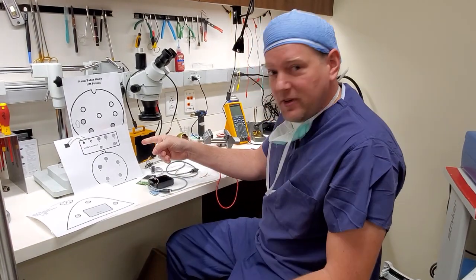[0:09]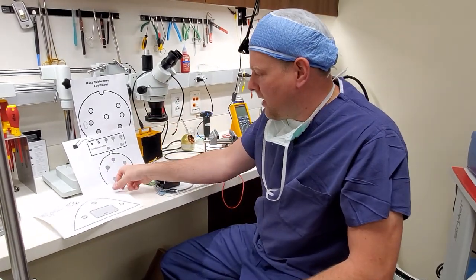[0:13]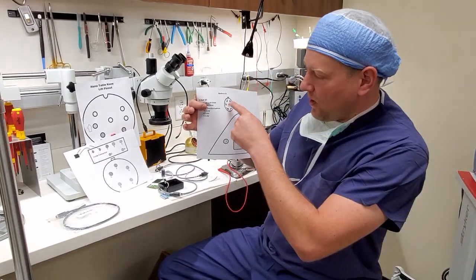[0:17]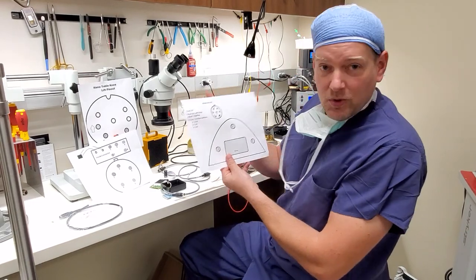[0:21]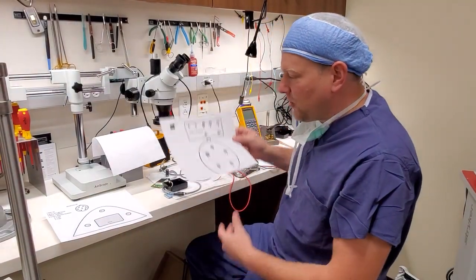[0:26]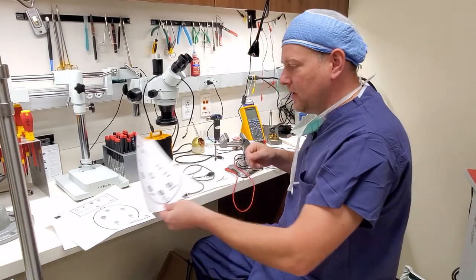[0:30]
We are going to learn how to do a pinout on a piece of equipment. Now as you can see over here, I've got several pinouts to existing things that I have. I've got a Medtronic IPC pinout. Normally these are all color-coded on my computer, but I only have a black and white printer, so what you see is a black and white pinout. I've got a Leica foot control pinout. Let's see, this one is a Hana table knee lift pinout.
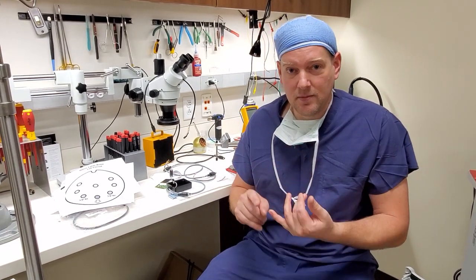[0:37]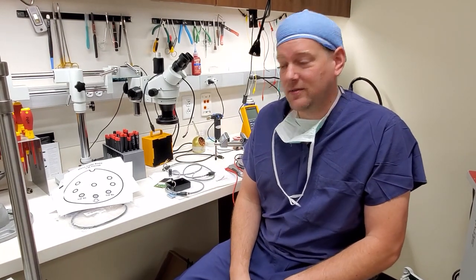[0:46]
It's absolutely essential that if you are going to be repairing equipment, you should document your pinouts correctly and be able to find the pinout for a hand control, foot control, maybe a motor controller, so that you can repair that connector properly and in a timely fashion.
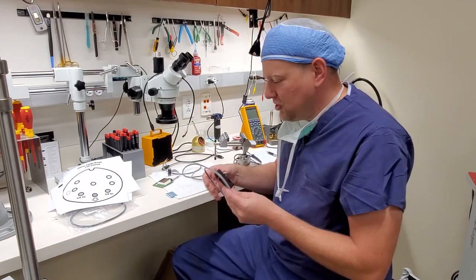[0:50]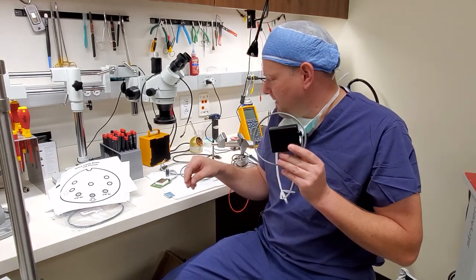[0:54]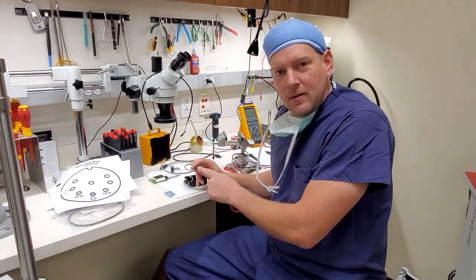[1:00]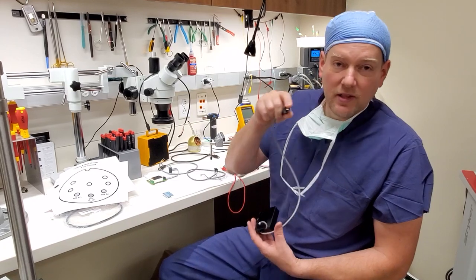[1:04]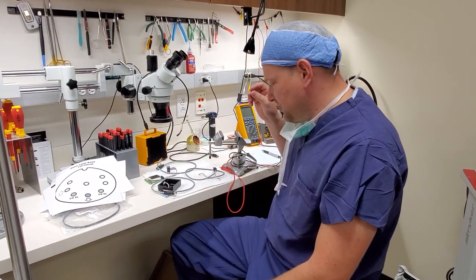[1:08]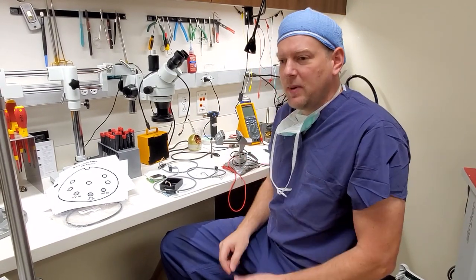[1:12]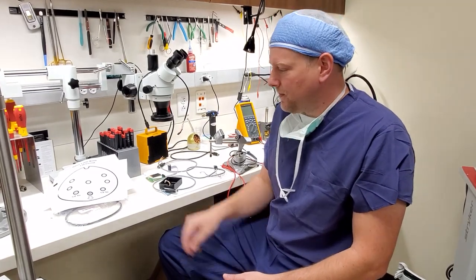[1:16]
Now this right here that we have is going to be a GE ECG cart. If I remember right, this is a modem. The problem is it's got an 8-pin mini DIN cable here, and because of user abuse, they always break off pins. So we are going to fix these things instead of buying a brand new one, because to buy this box, if I remember correctly, it's over $700.
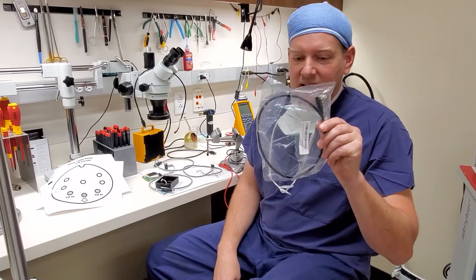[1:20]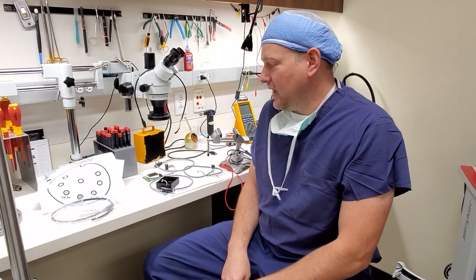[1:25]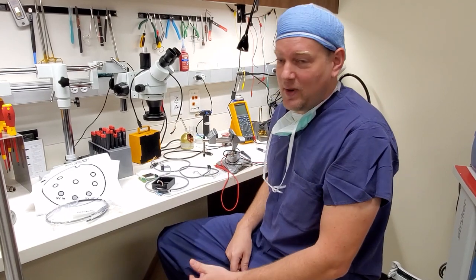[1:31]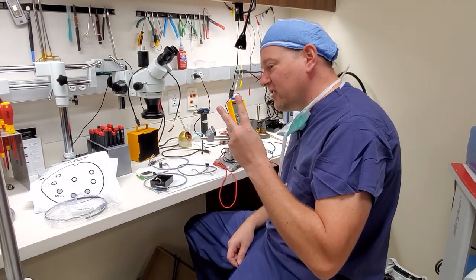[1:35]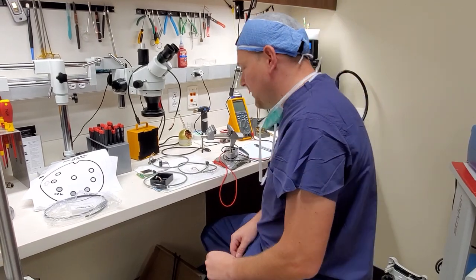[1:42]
And I can buy a male-to-male mini DIN cable, which will allow me to fix two of these boxes, and it cost me $7.32 from Amazon, and I get it in 2 days. So a $7 part can fix two $700 boxes, and we're going to show you how to do it using your own pinout. So we're going to start right out.
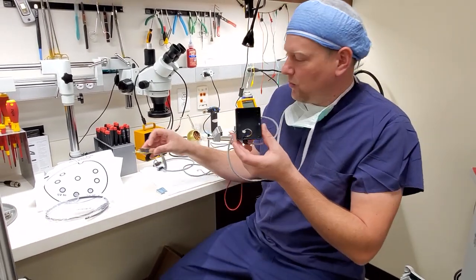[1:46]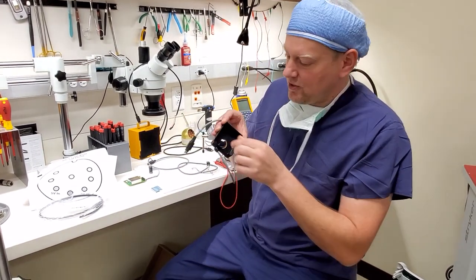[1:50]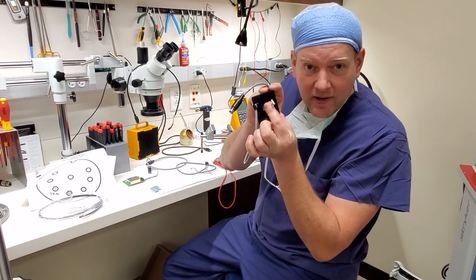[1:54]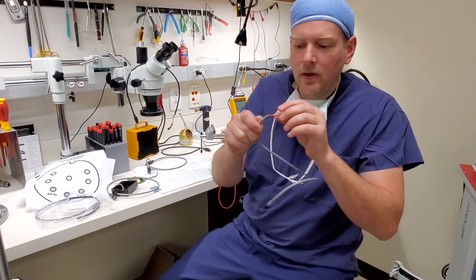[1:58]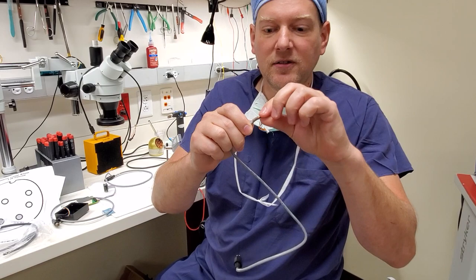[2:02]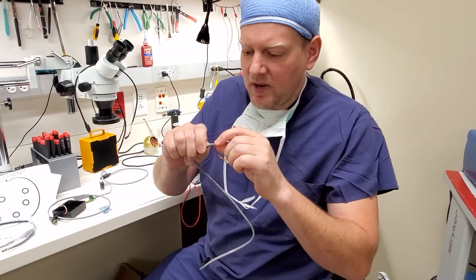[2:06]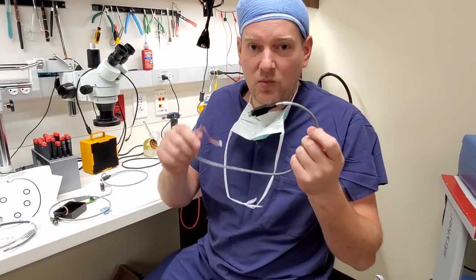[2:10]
On the inside of this box, you're going to have your PCB, which has your cable. And even though there's 8 pins, you're going to notice that there are only 4 wires that come out to the internal connector. One of the other things you'll notice, if you look very carefully, is a terminated set of useless cables. You have to be careful, because sometimes these terminated cables will be shorted pins, and that will tell the equipment what type of box is connected or vice versa.
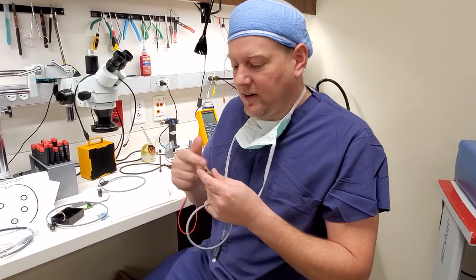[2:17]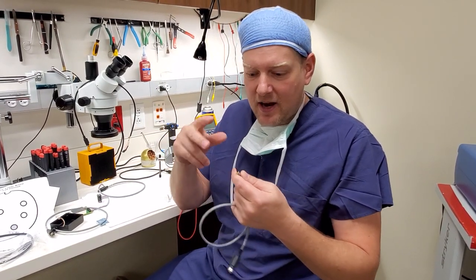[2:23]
So the first thing I had to do when I did the pinout on this particular device is pull the heat shrink off and verify that all those wires are just cut flush. They're not actually terminated, soldered together.
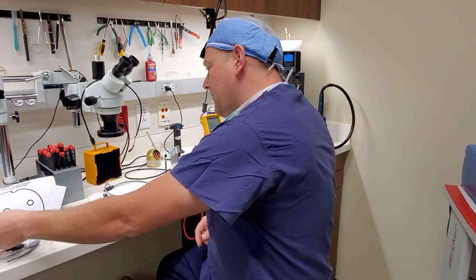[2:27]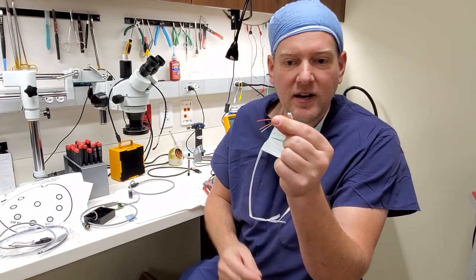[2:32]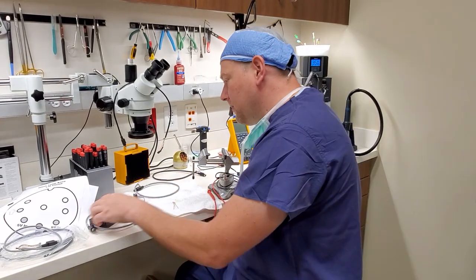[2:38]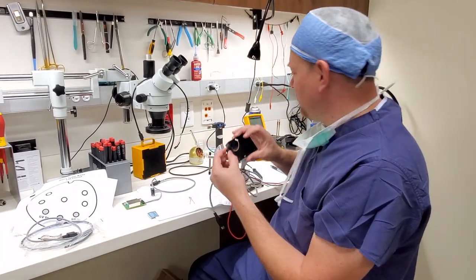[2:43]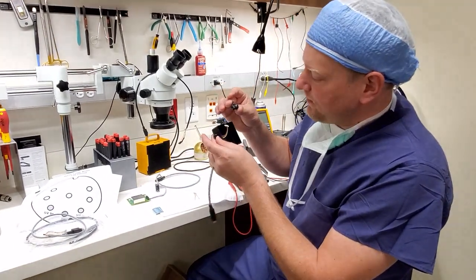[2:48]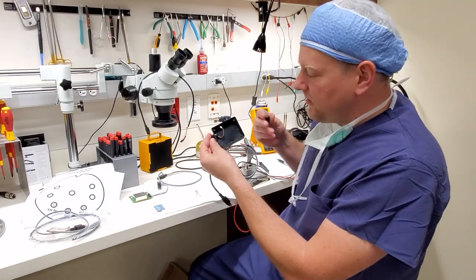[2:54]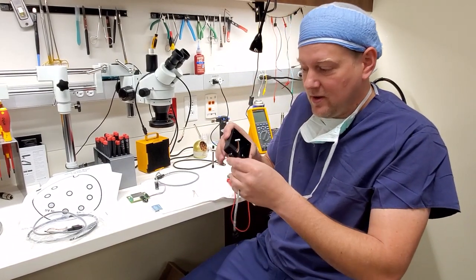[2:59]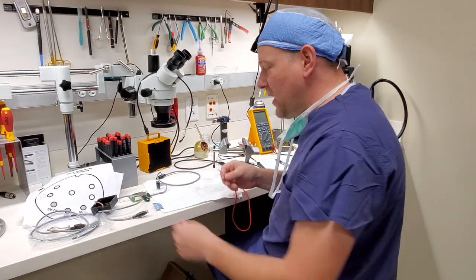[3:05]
Once we get that out, you are going to cut off your miniature connector. We are going to cut this off of your old cable. You can see it right here. I cut it off. You squeeze this little connector, which is actually your cable strain relief, and when you squeeze it, you'll notice that there's some adhesive in there. So we use the hot air station to heat up the adhesive, squeeze it so that we can pull out the cable, cut your connector off, and then we are ready to do the pinout.
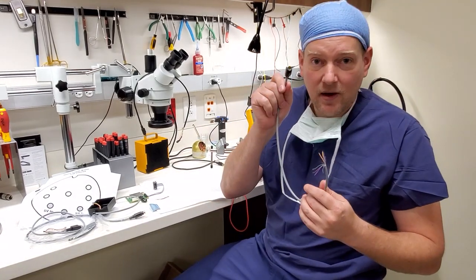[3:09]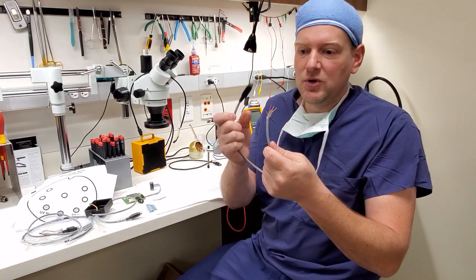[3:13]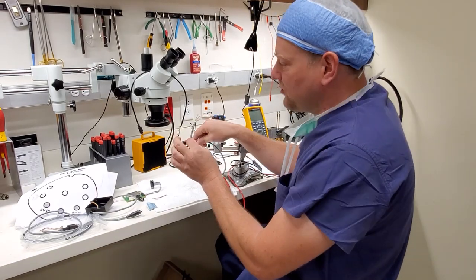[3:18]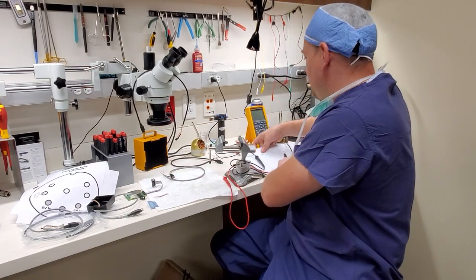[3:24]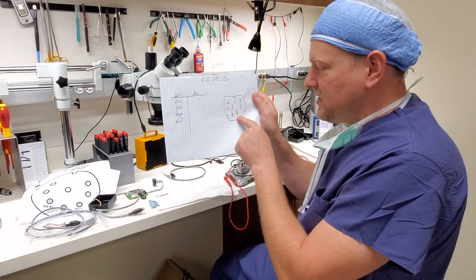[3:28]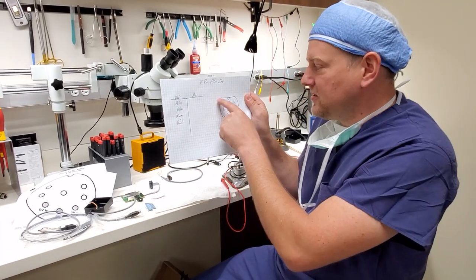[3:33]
You can see here we've got our original old 8-pin mini DIN, and the original wires were orange, yellow, red, and blue. I've got those wires separated and stripped back just a little bit so we can find the pinout. One of the main things that we do in our documentation is draw a representation of the connector. And since all connectors are different, your representation should be different for every single device that you pull out.
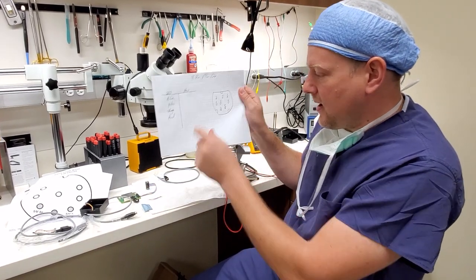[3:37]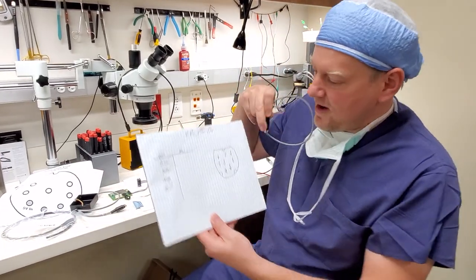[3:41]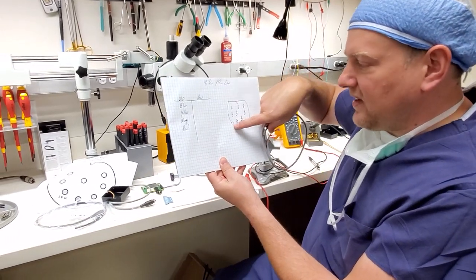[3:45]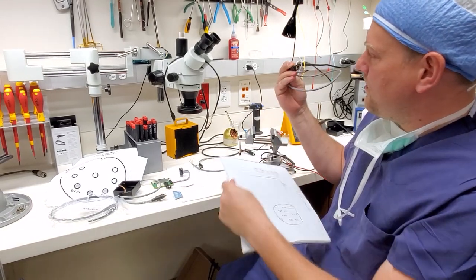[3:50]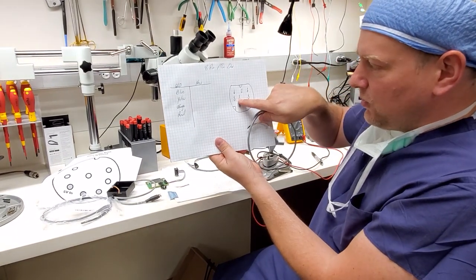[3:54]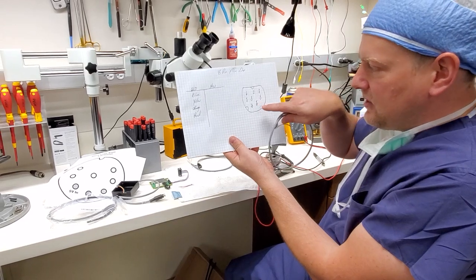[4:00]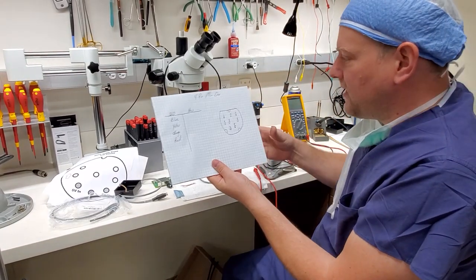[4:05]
You can see here, since it's a mini DIN, the top of the connector is flat. There's a recessed indexing mark at the top and two at the bottom. You have 3 evenly spaced pins at the top, 2 that are closely spaced over on the left side, 1 remote pin over on the far side, and 2 of them down at the bottom. So that's my representation. The next thing you do is label those pins.
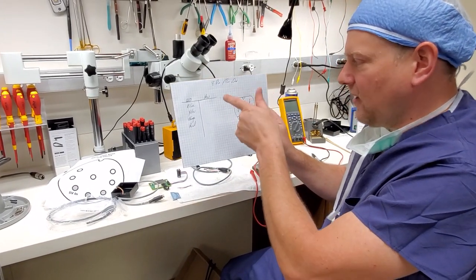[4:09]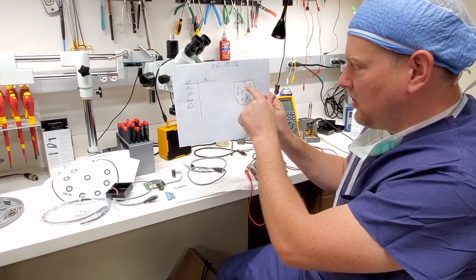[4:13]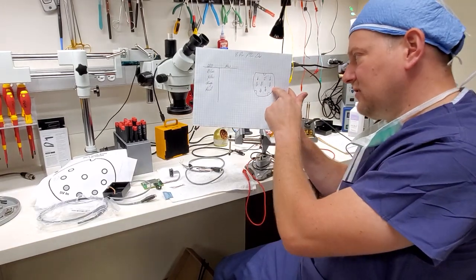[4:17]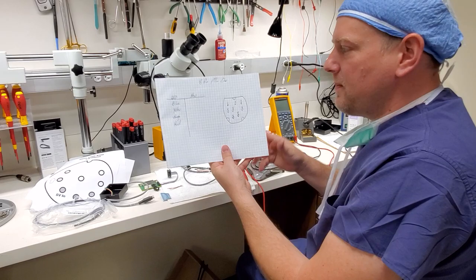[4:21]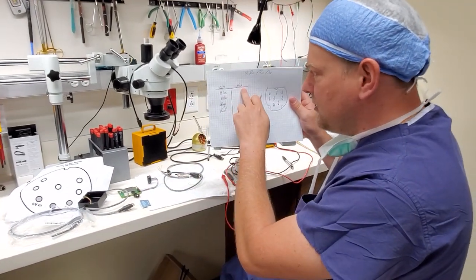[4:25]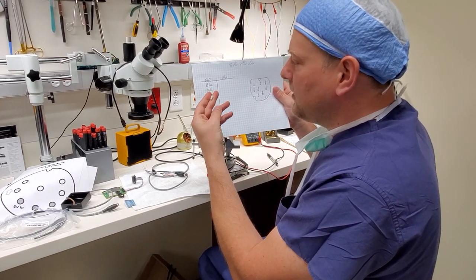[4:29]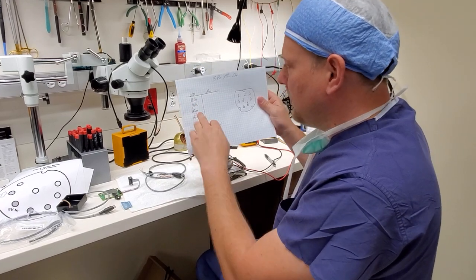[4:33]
And I start at the top left, and you go sequentially across the connector. So I did pin 1, 2, 3, 4 and 5 are next to each other, pin 6, pin 7, pin 8. Now I have the basis to start my pinout. You can see here, I have old and new segmented on my page. I have my old connector. There's 4 wires, blue, yellow, orange, and red. So I have those written down and ready to rock and roll.
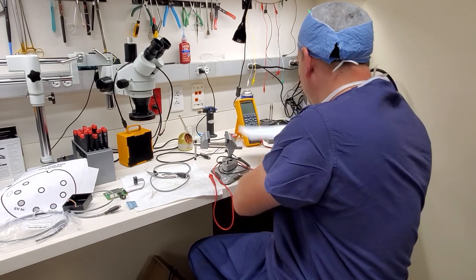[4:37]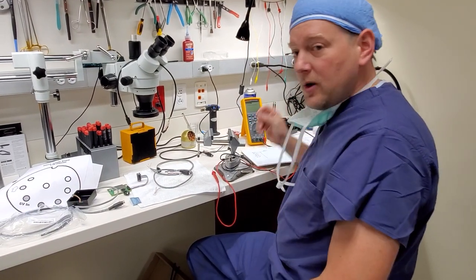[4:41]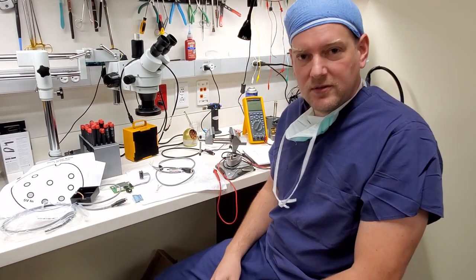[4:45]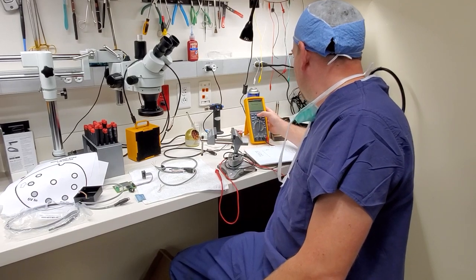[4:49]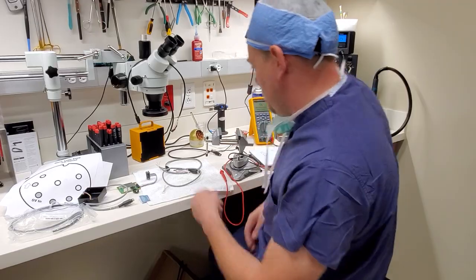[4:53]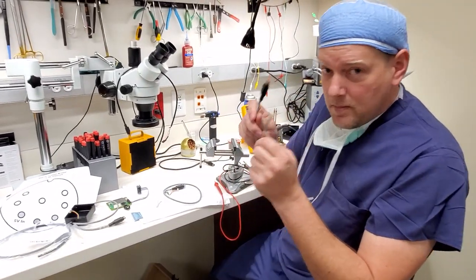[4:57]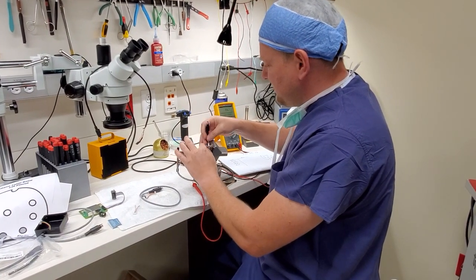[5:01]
Go ahead and start up my multimeter, and we're going to put it on continuity, because you're going to use continuity to find the endpoints of your cables. So let's see, we put it on there, we get the bleepity bleep, and we're ready to go. So I have my original mini DIN, I'm going to go ahead and put it in a vise so it's nice and stable.
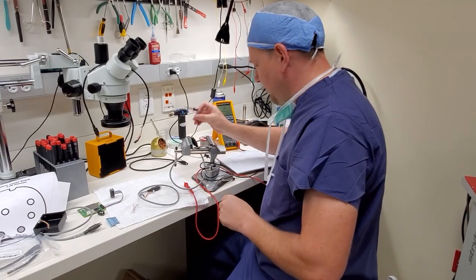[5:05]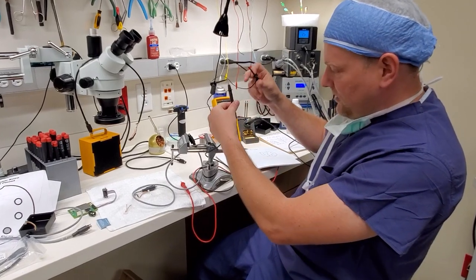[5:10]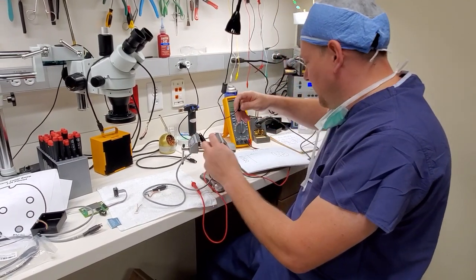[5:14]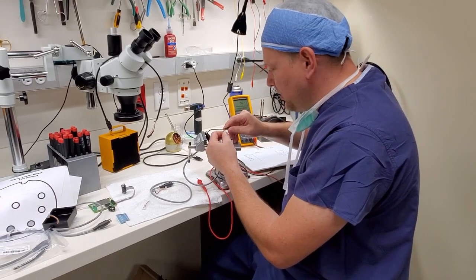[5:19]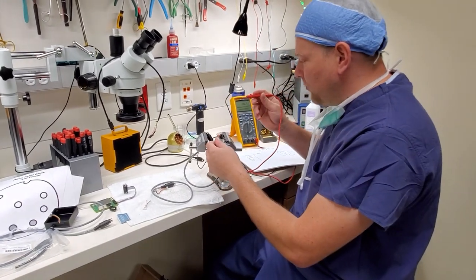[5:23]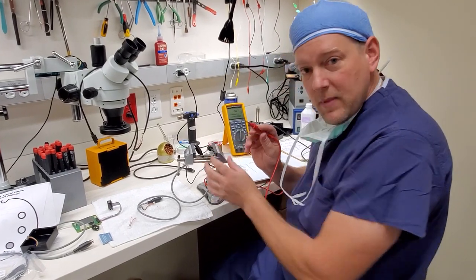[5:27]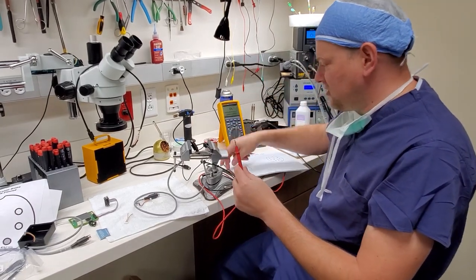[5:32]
Then the next thing I will do is I've got little jumper wires. You can see I have one connected to the end of my meter lead. And I'm going to connect it to one of those four colors. You got blue, yellow, orange, and red. So I'm going to connect it to the blue. And we're going to take our other meter lead and we're going to touch that blue wire and make sure that we have continuity. And that also tests your jumper wire, it tests your lead, it tests everything. So that's your first step.
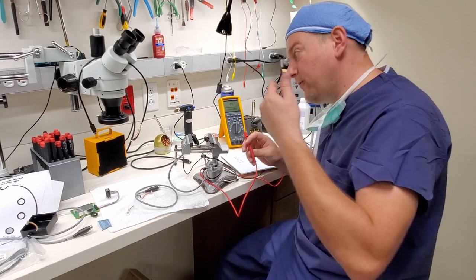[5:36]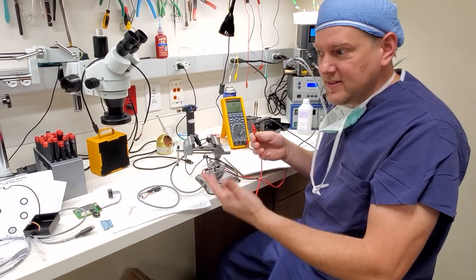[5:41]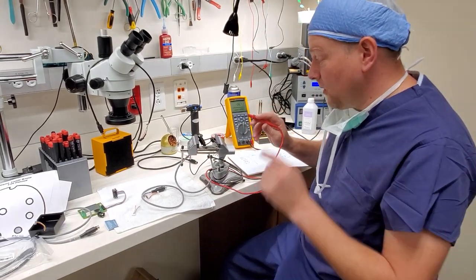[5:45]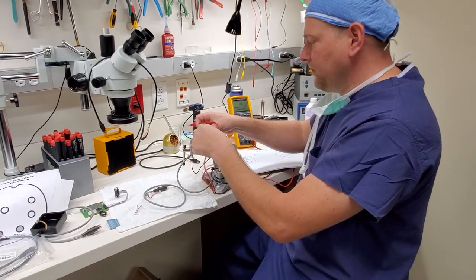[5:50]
Check your leads before you start doing your pinout, because if you have bad leads or if you have bad jumper wire, it does happen, you're going to do a lot of work and you're going to be chasing your tail. So check your leads first. We're good. We're ready to rock and roll.
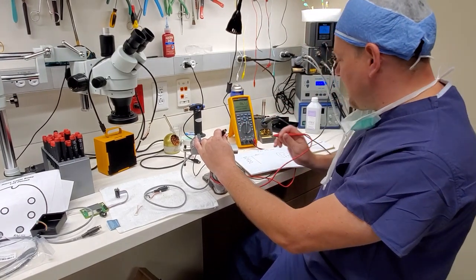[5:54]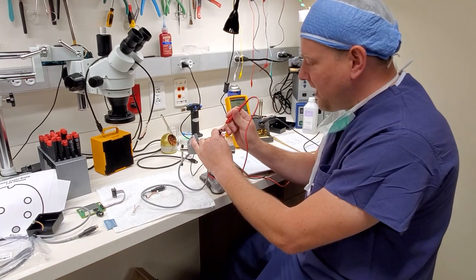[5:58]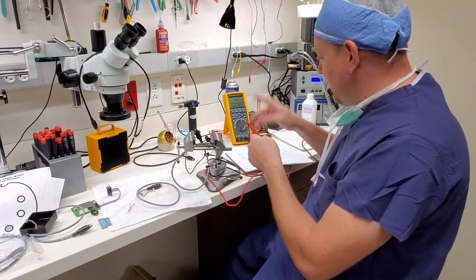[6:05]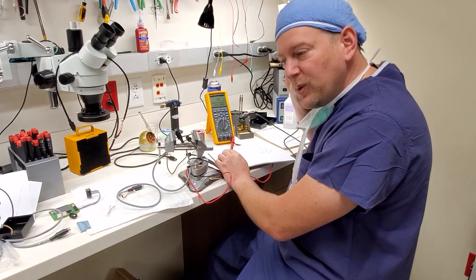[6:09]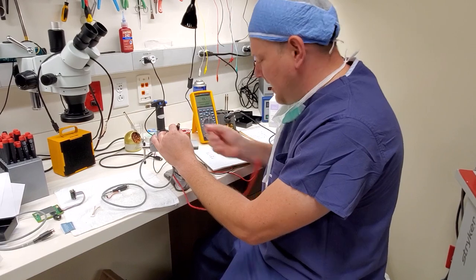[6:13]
I take my 8-pin mini DIN and I start with pin 1, and then we go to pin 2 and pin 3, and we find out I didn't get very far. You can see I got to pin 2. You don't even have to look at the meter. Just set it on continuity so you can hear it if you have continuity. But I'm not going to stop there. So I got it. I got the pin 2.
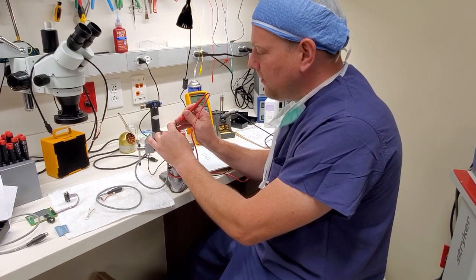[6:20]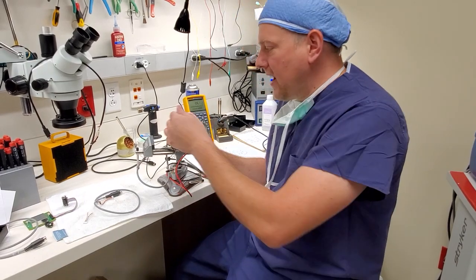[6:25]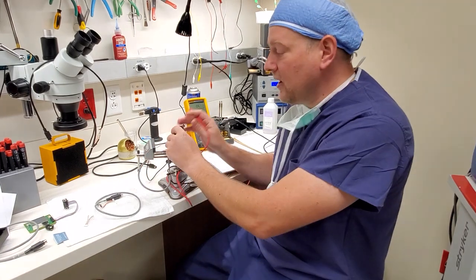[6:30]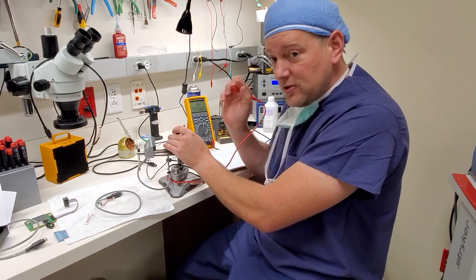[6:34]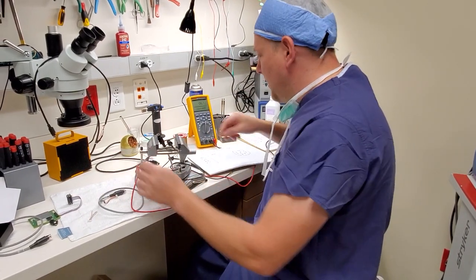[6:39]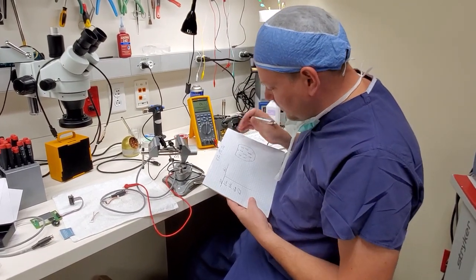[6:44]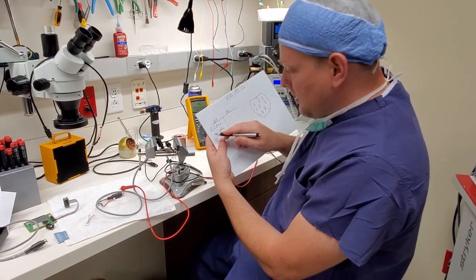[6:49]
Now you got to check the other pins, because in some cables you will have a resistor or a jumper either inside the connector, on the back of the connector, or in line down the cable someplace. So be sure to check your cable to make sure that there's only one pin that is continuous to that specific wire. So then I'm going to take my ink pen. That was pin 2. So I'm going to write pin 2. Pin 2, blue.
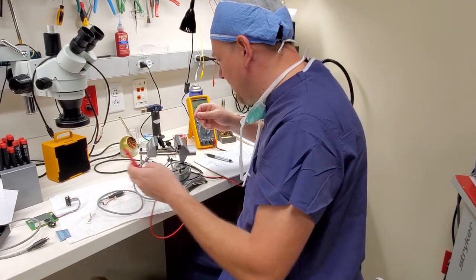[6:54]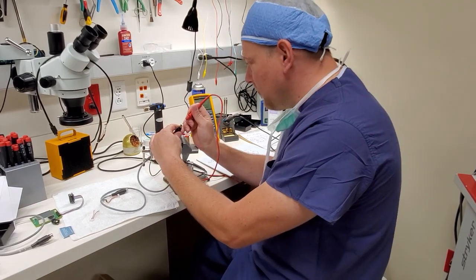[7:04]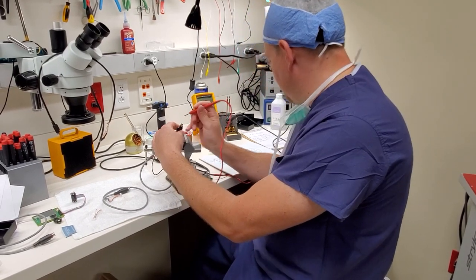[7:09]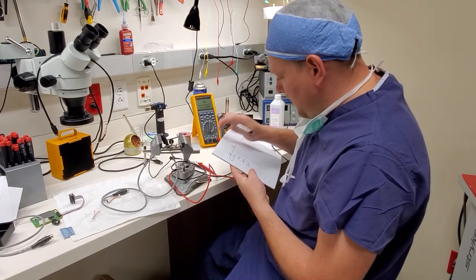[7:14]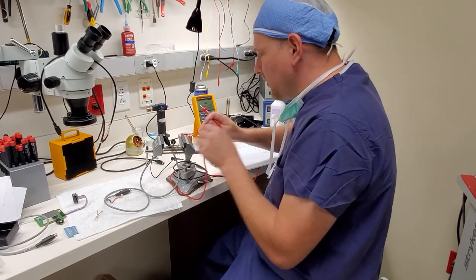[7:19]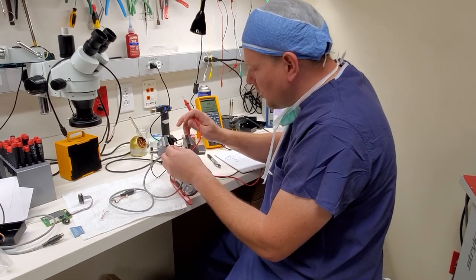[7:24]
Next, we got yellow. We're going to go down from there. I'm going to move my meter lead jumper to yellow. It's connected over. I'm going to grab the 8-pin mini DIN, and we're going to run through all the pins. And you can do this really quickly. Okay, so according to my little chart here, yellow goes to pin 4. So we're going to go pin 4. Switch it over to the next. Next one is orange. So we're going to go through them.
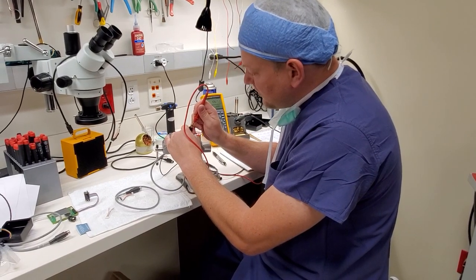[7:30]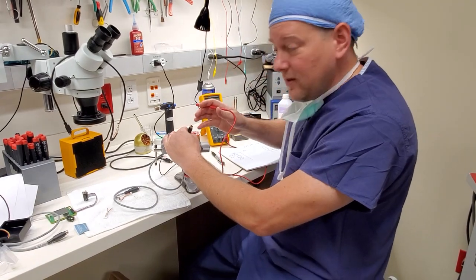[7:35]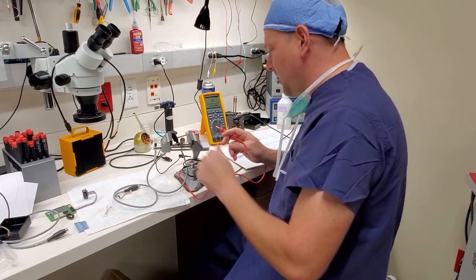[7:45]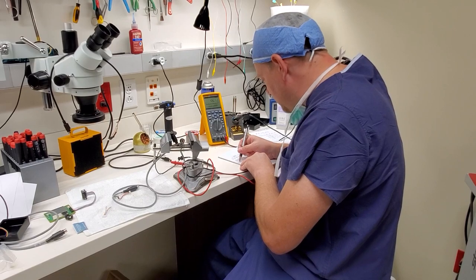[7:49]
All right. So on this particular cable, I have one pin that snapped off, which is the whole reason that we're going to do this repair. And it appears that the orange cable goes to the broken pin. So I just shove it down in there. I already checked the other pins. It only goes to one, the broken off pin. So here we go. Pin 5 is orange.
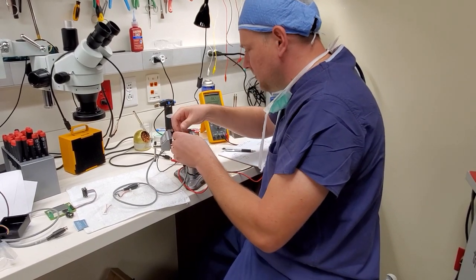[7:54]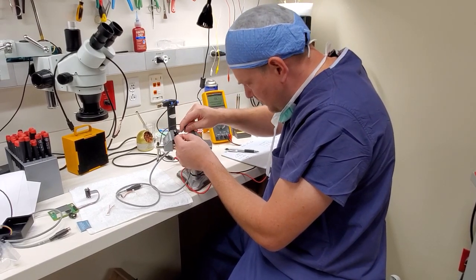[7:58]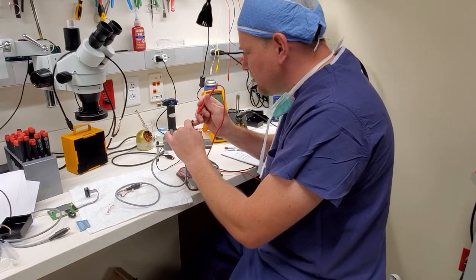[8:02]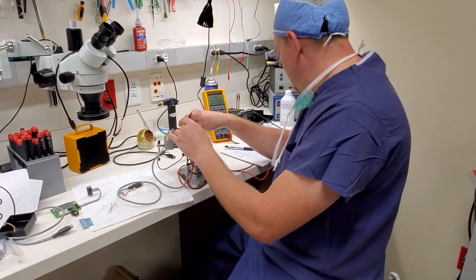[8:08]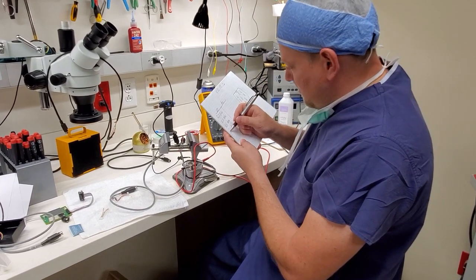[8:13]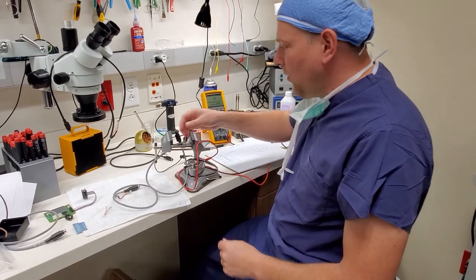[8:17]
And last but not least, we're going to go down to red. Let's check which one's red. 1, 2, 3, 4, 5, 6, 7, 8. Okay, pin 6. So red goes to pin 6 over here. All right, we have our old cable with its pinout.
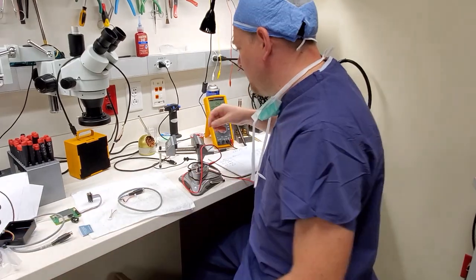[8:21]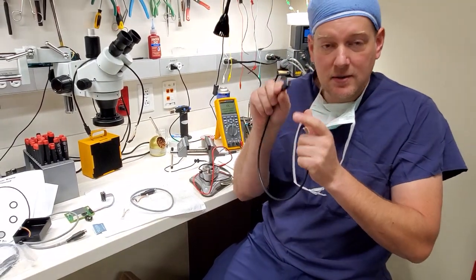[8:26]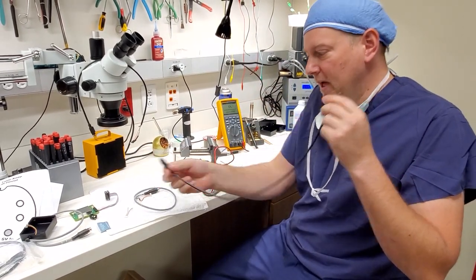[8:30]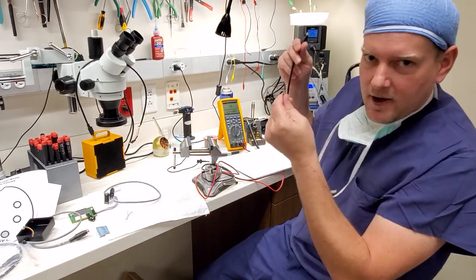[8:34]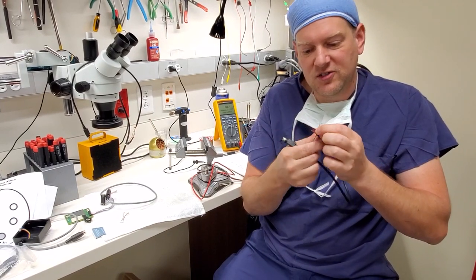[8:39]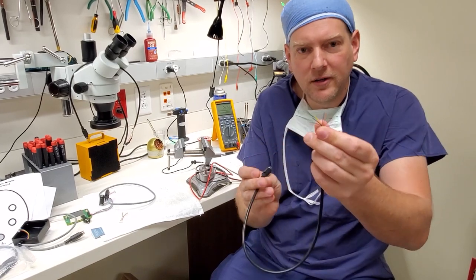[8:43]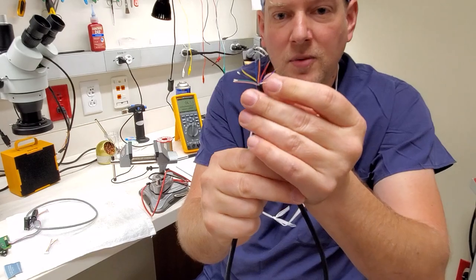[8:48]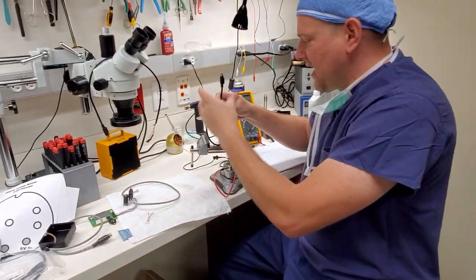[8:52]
Now what we have to do is we have to take our new cable. And as I said, this is a double-headed male-to-male 8-pin mini DIN. So what I do is I stretch the cable out. I get an approximate length from the old cable and I cut it off. You strip it back so that all the wires are separate and the little bit of ends are barely showing. I don't know if you can see that or not. So I have all the pins separated and we are gonna go ahead and set this guy in the vise.
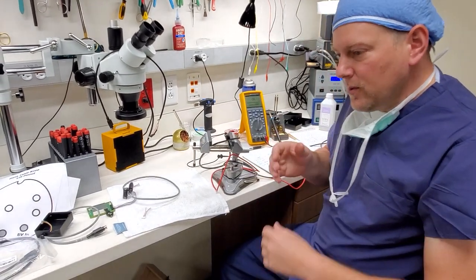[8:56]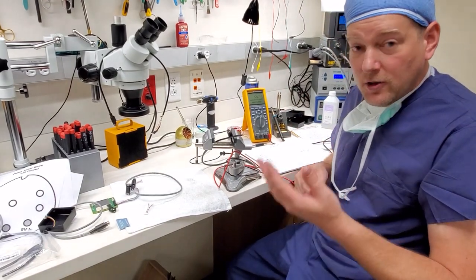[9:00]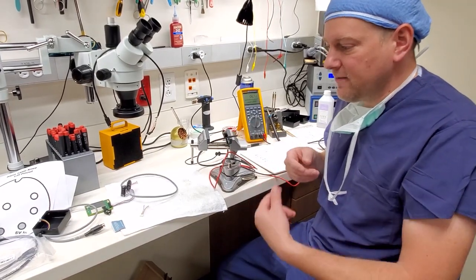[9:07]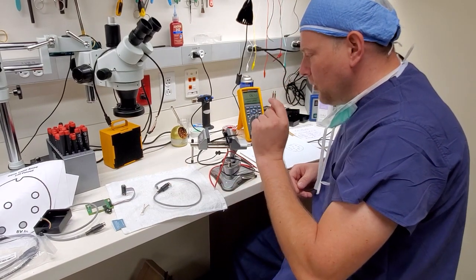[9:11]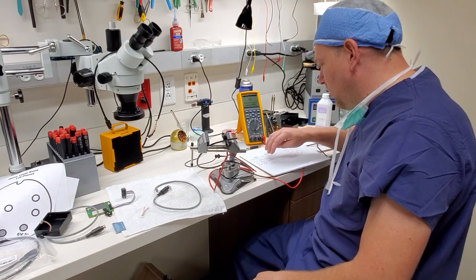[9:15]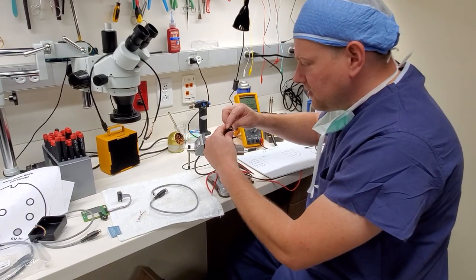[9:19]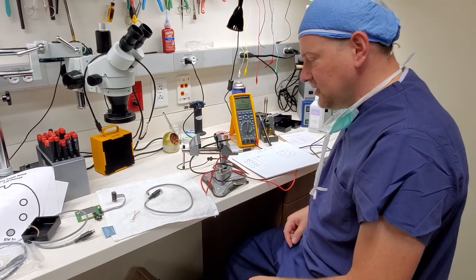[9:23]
Now you can't do color code, cable to cable, because every manufacturer is going to have a different color pin out and you're going to have a whole bunch of variety. So always check your pin out before you start soldering stuff up, especially on medical equipment. So we know that we got those four: blue, yellow, orange, and red, pin 2, pin 4, pin 5, and pin 6. So we know the location of those pins based on our existing chart.
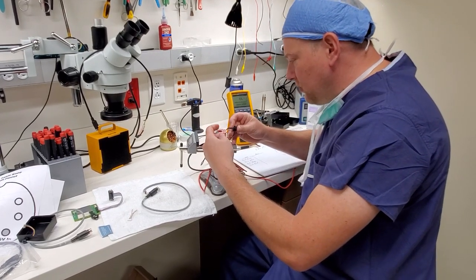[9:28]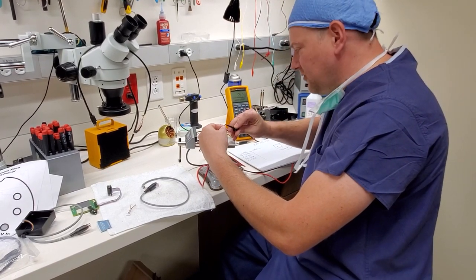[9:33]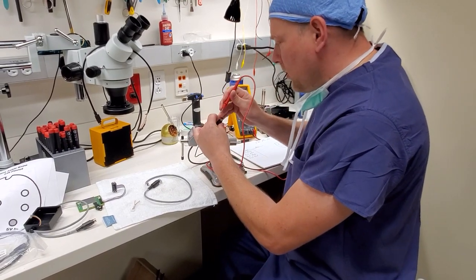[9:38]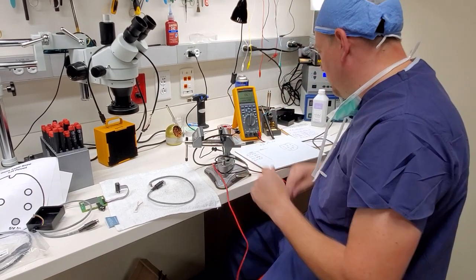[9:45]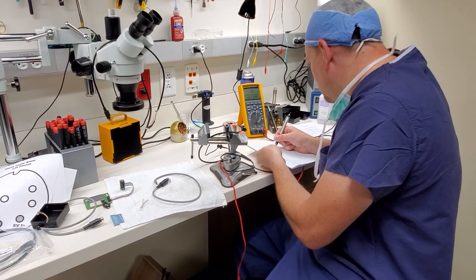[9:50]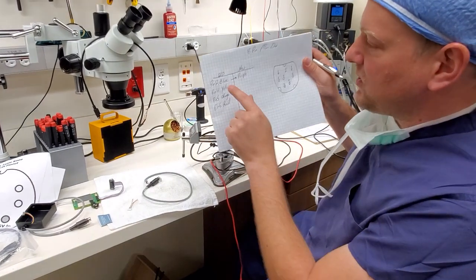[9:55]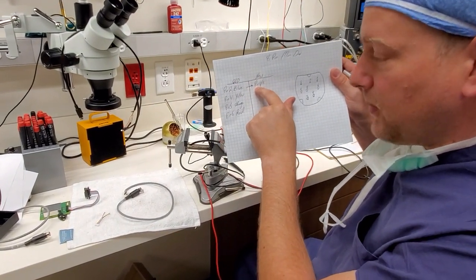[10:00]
So what I'm going to do is go ahead and connect to my first wire, which is going to be, let's do purple. And we're going to start at pin 1 on the mini DIN. There we go. So purple goes to pin 2. Okay, so as you can see here, I annotated that on the new cable, pin 2 correlates to purple.
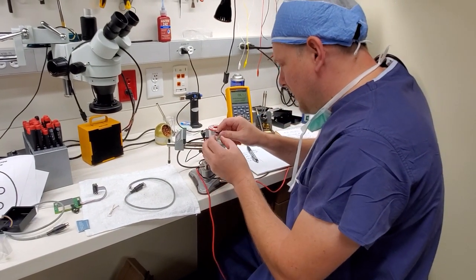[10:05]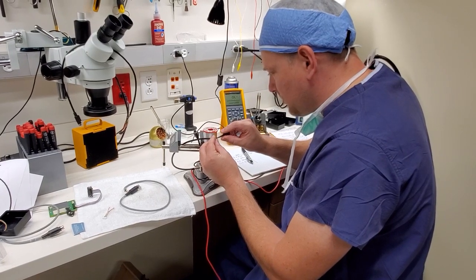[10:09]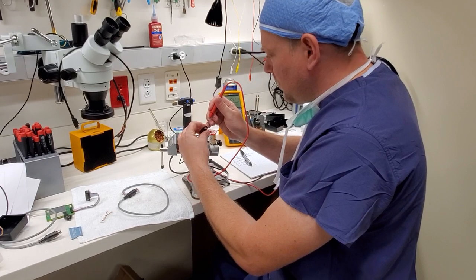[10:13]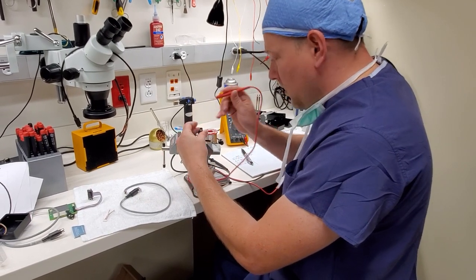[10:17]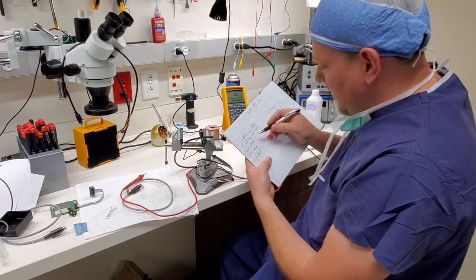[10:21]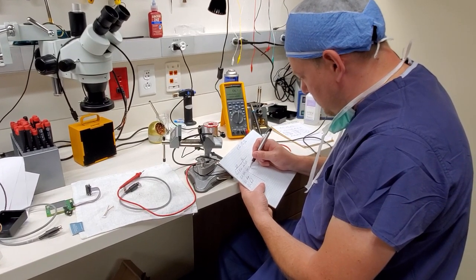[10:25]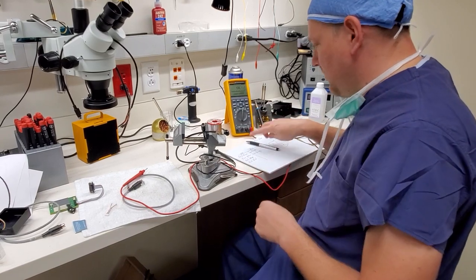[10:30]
Then we're going to go to the next one. Let's try orange. Let's try the orange cable. It's all connected. Pin 1, pin 2, pin 3, pin 4. Okay, orange goes to pin 4. So yellow, draw a line over. Okay, pin 5. Let's try yellow.
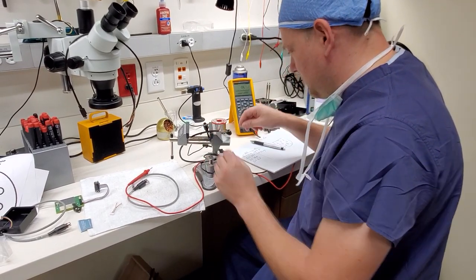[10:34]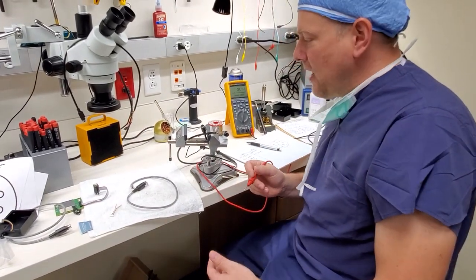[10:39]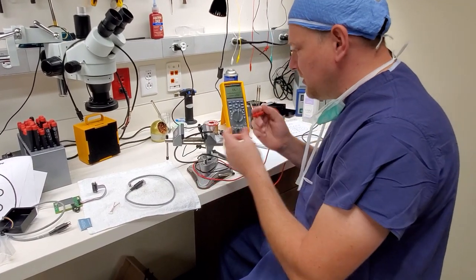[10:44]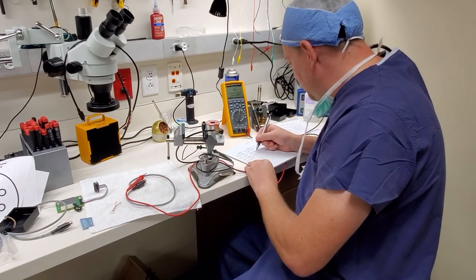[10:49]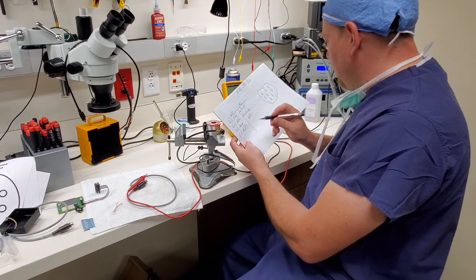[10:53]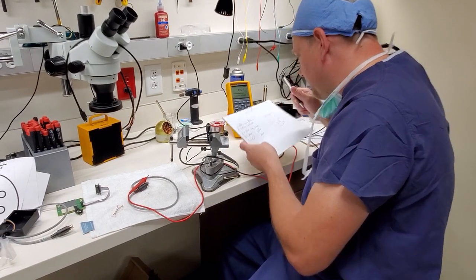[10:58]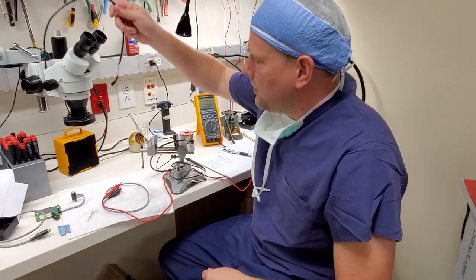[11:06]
Now mind you guys, obviously I've already done this pin out and I've already tested this, so I know what the new color codes are. I'm going to just go ahead and show you guys. We got pin 5 is yellow. And I already know that pin 6 goes to green. So now, I've got my old pin out, I've got my new pin out, I'm ready to start soldering some wires together. You can see here, I've already done it.
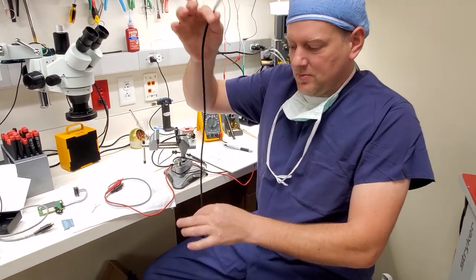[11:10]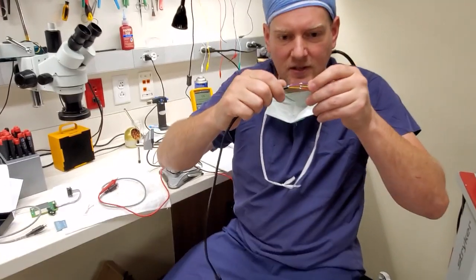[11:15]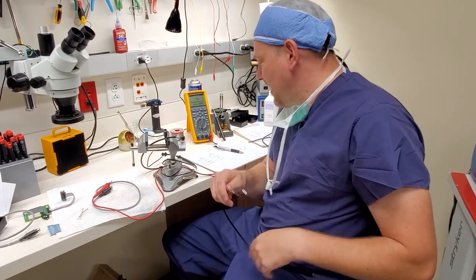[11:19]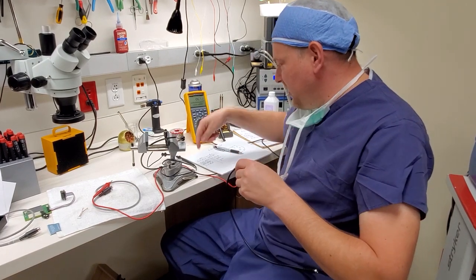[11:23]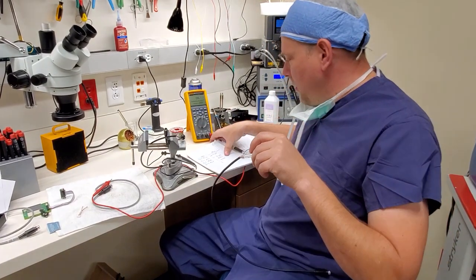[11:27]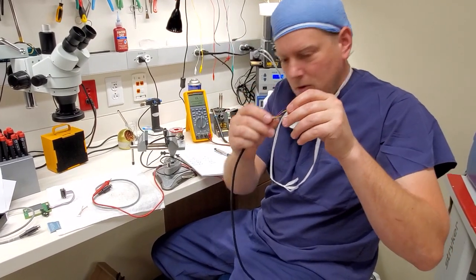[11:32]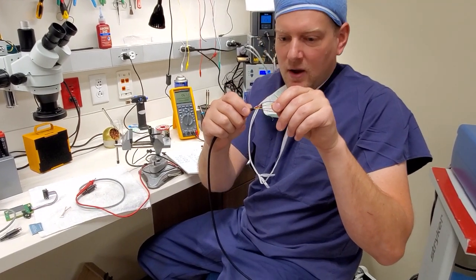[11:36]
So this right here is my new cable, my old end. I have them soldered together in the new color coordination. So we have pin 2, blue, which is on the old connector, goes to purple on the new. So you can see right here, I got blue to purple. My next one is pin 4, yellow, goes to orange. And I got orange to yellow, and then red to green.
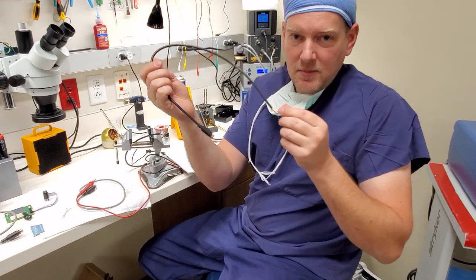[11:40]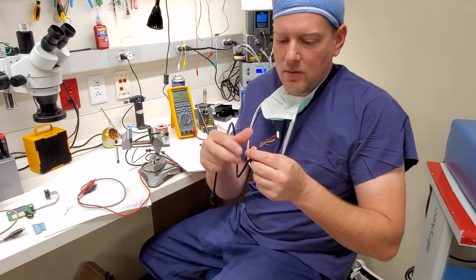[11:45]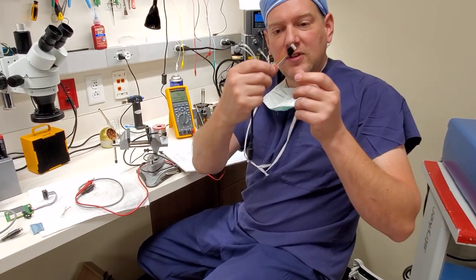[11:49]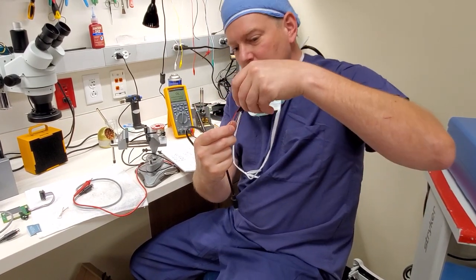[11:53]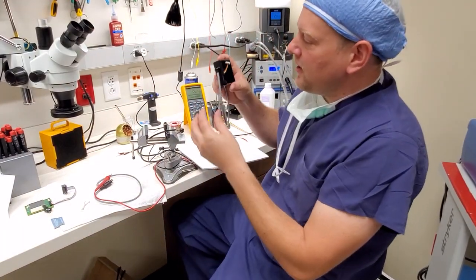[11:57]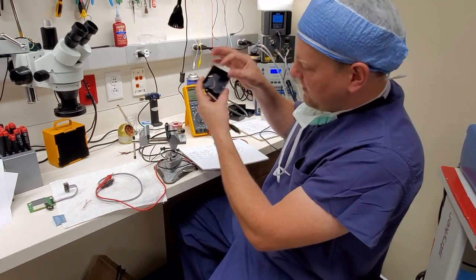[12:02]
Now this cable is going to be different for, you know, batch numbers and everything. So always check your pin out. Don't just solder it up according to the colors that I'm reporting off. But you can see, I've got them all set up. I've got them all lined up. We're ready to shrink tube it. And once it's shrink tubed, I will reinstall it with the cord retainer, and it will look exactly like this when I'm all done.
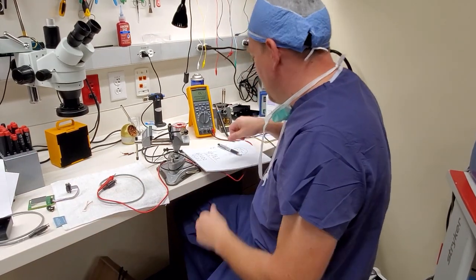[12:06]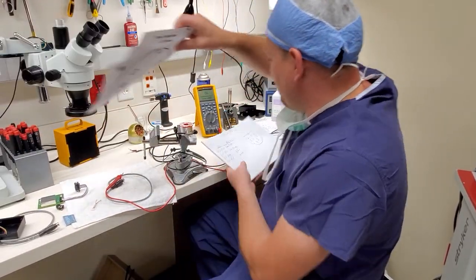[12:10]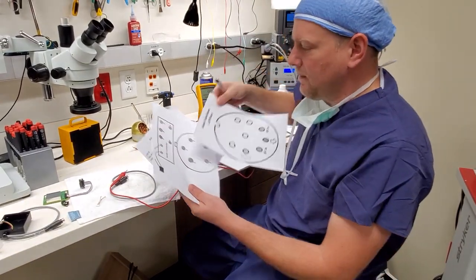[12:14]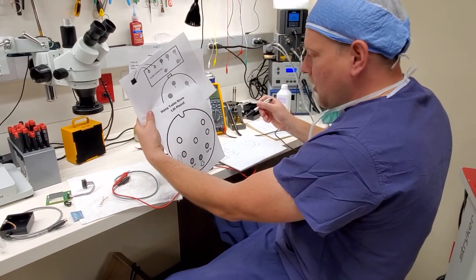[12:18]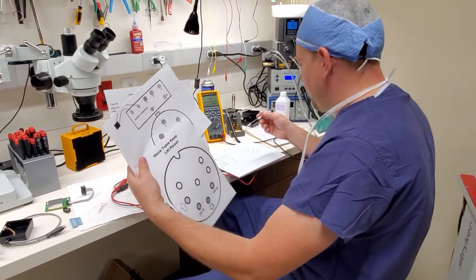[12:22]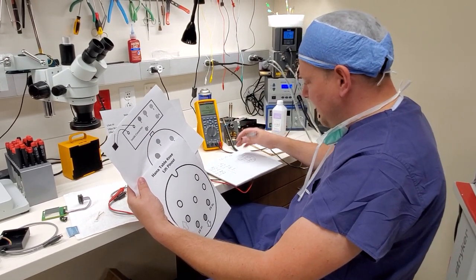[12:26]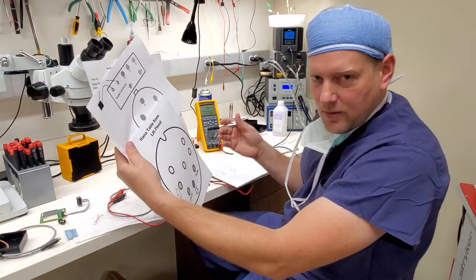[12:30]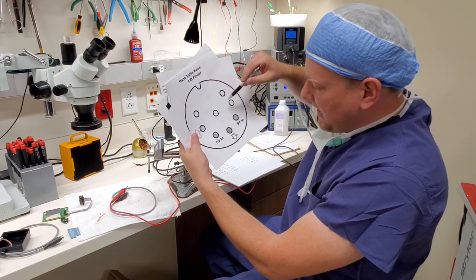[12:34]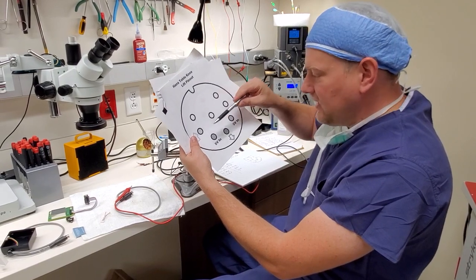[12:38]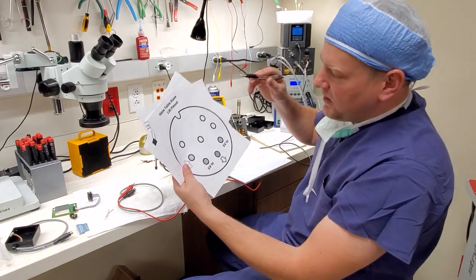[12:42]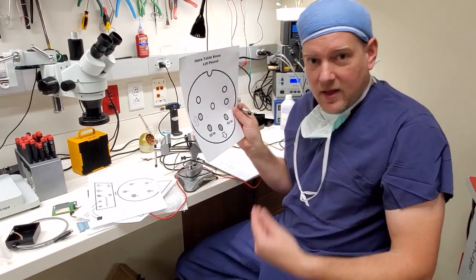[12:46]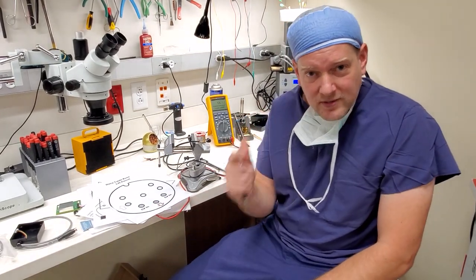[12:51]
So now that I've got the pin out, what I do is I will create in Microsoft Paint, believe it or not, people still use that program. I will go ahead and coordinate to the connector that pin 4 and pin 5. If pin 4 is blue, then I'm going to put blue. And then I'll have another connector right next to it that says the new connector, and I'll say what that pin correlates to. Even though this is in black and white, you can see that I actually do color code it. So I do a fill of like yellow, blue, green, purple. And that way, I keep this on my Google Drive and I can pull up a pin out anytime I need one of these to be repaired. Do the work once, you verify the repair, and you're good to go.
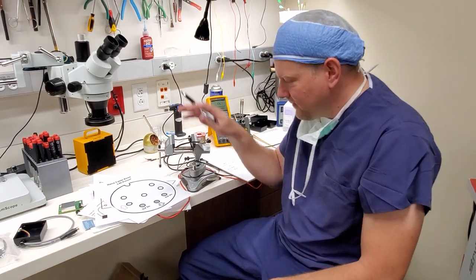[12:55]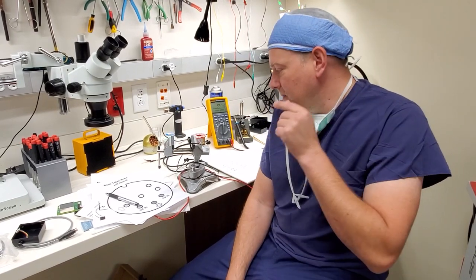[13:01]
So guys, that's how you do a pinout on a piece of medical equipment. Verify your repair, make sure you do it correctly, and don't cut any corners, and you can repair stuff instead of buying new. Thanks for watching, guys.